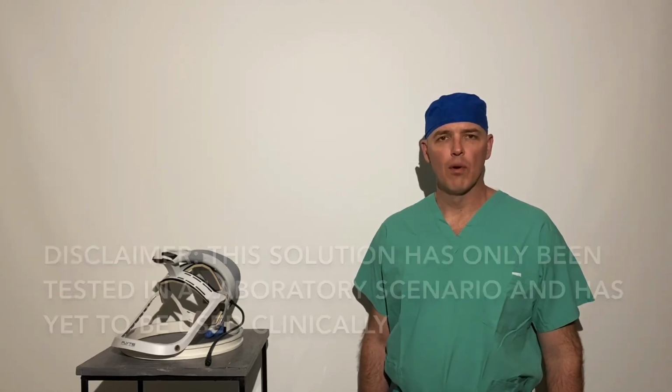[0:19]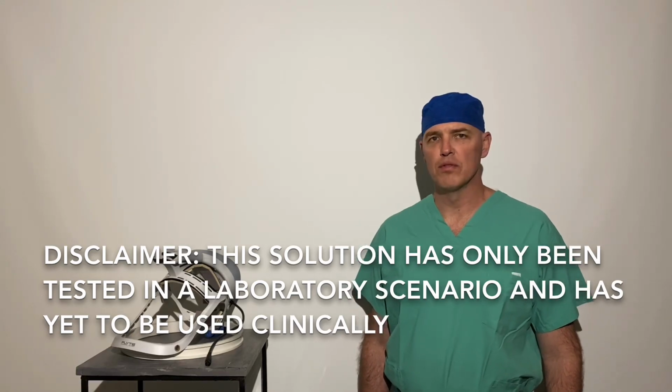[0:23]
When the coronavirus pandemic started, I started thinking, how are we going to be able to protect ourselves against this virus? And as the personal protective equipment necessity has grown more dire, I've been working with Virginia Tech and Stryker to come up with a solution for the Stryker togas that they use in orthopedic surgery. We have taken this concept and tested it with nanoparticles down at Virginia Tech to prove concept, and we can show you how to have an N99 or better PAPR unit that you can use with readily available materials in the hospital and your ortho Stryker helmet.
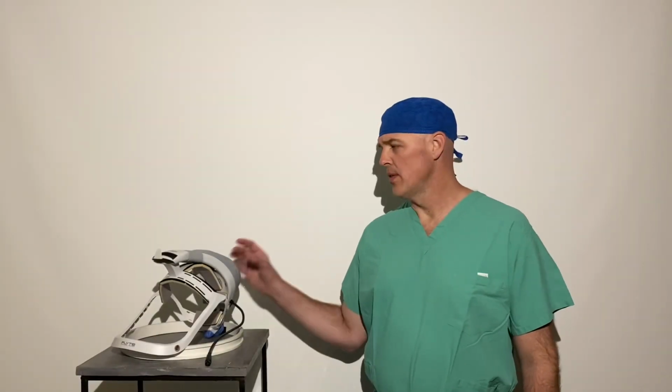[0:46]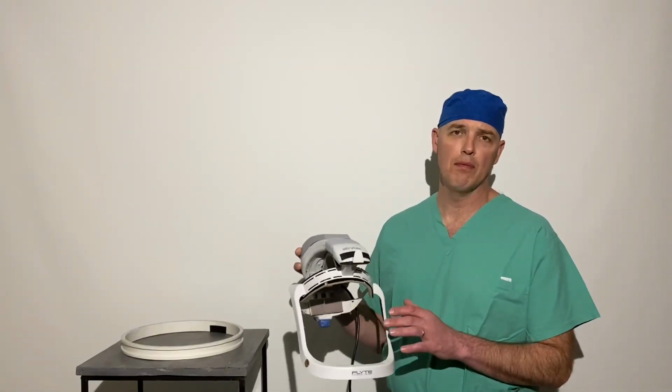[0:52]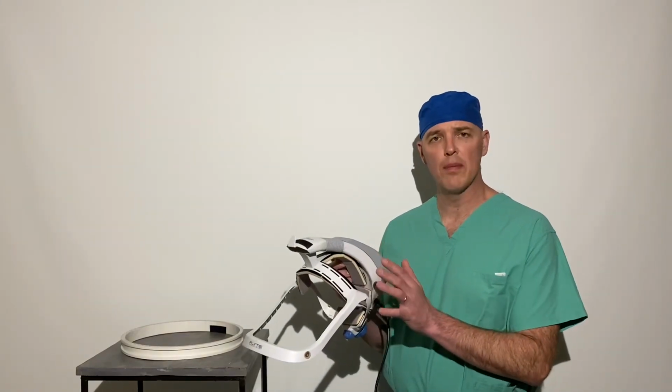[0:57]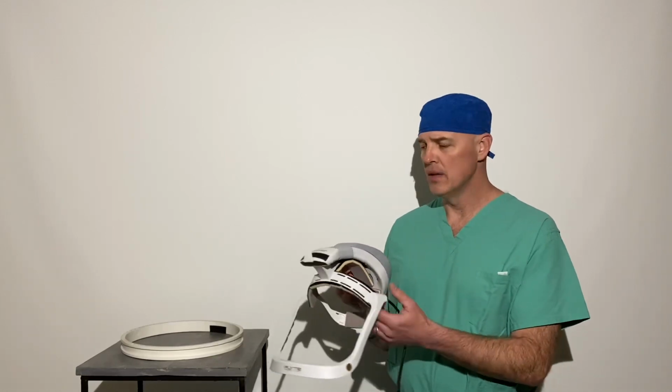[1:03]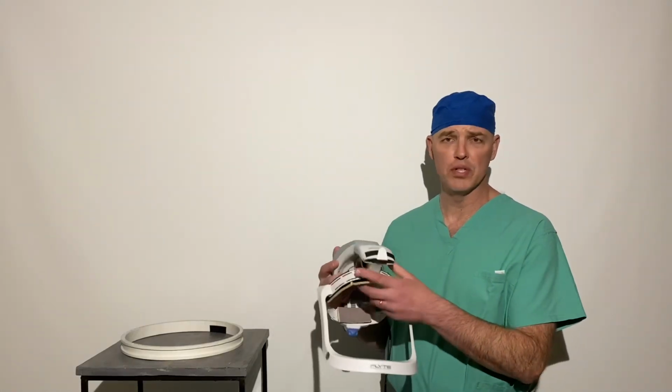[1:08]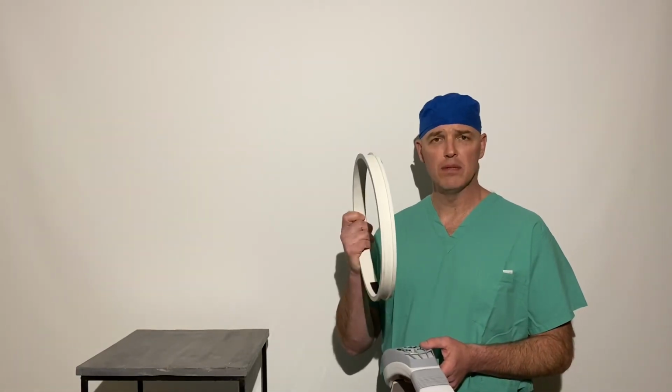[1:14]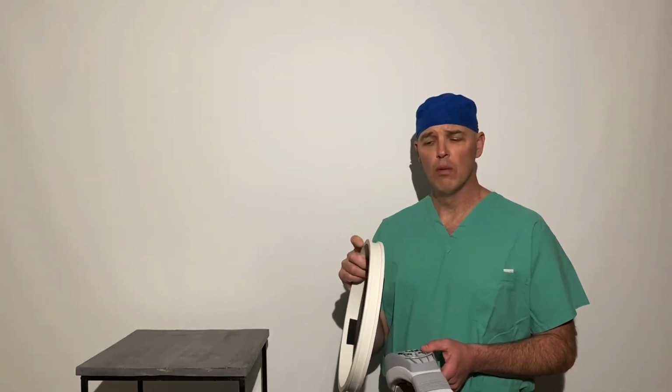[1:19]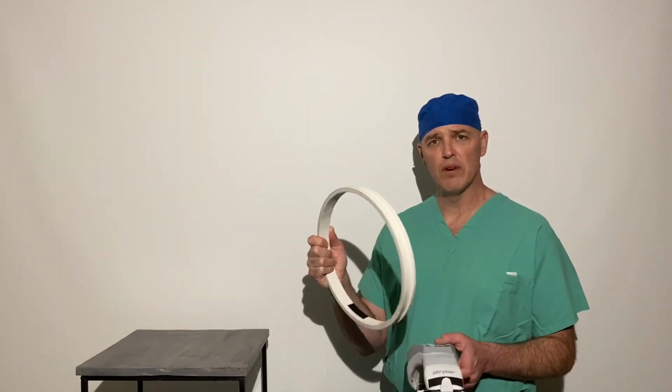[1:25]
So what I started thinking about was how we'd be able to take the Stryker helmet and apply something over top of it to make it protective. And we very quickly figured out that there wasn't enough structure to the top of the helmet to be able to put something over top of it, because it just would collapse on the inside and come off. And so we came up with the idea of putting a ring around the helmet to make it have more purchase area. So essentially we created a ring that is a 12-inch PVC pipe that has been cut to a width of an inch and a quarter, with a 3/4-inch groove cut out of the center of it. This is very rigid and very stable.
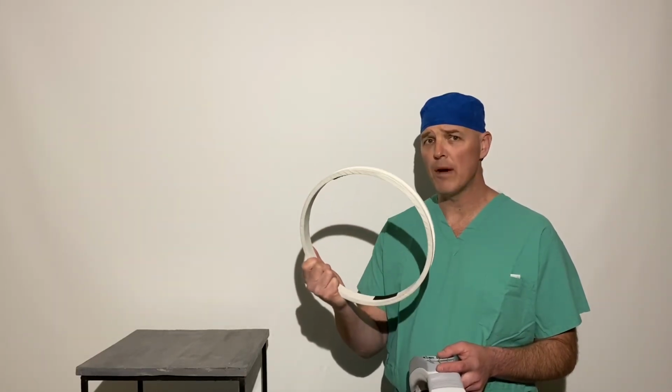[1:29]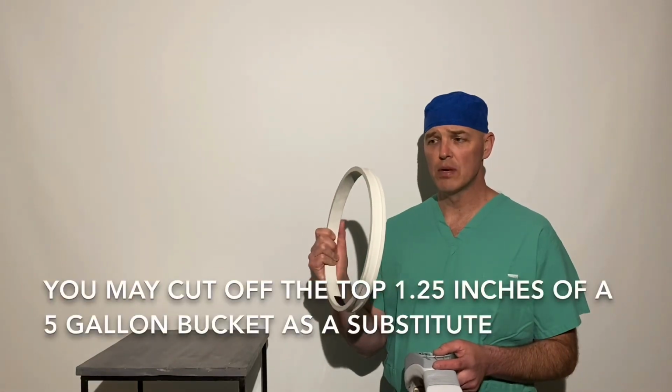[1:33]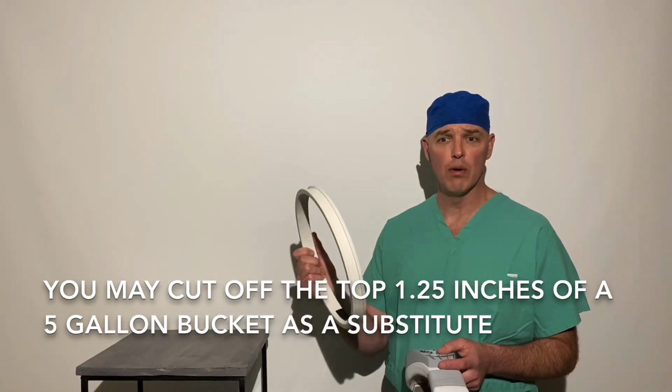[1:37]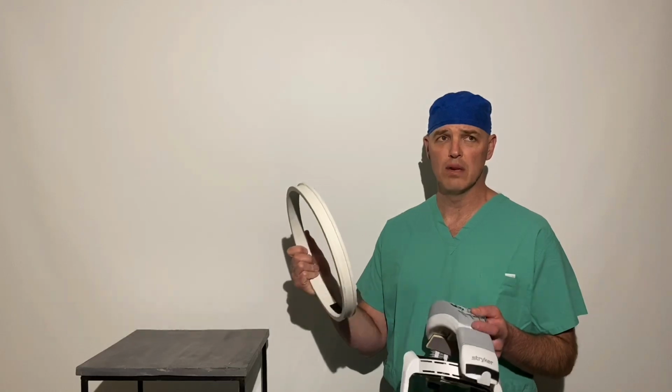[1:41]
The PVC pipe that we found to be the best is the white pipe. I'm not sure about whatever pipes you would have available. This material can be sourced through us here in Roanoke. This is not a money-making thing. This is just a matter of, if you need stuff quickly, we can help make that happen.
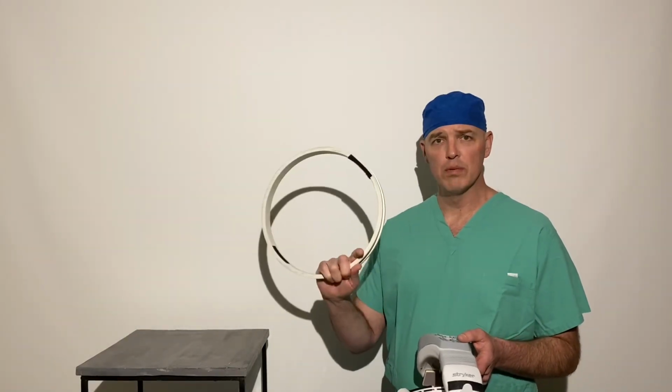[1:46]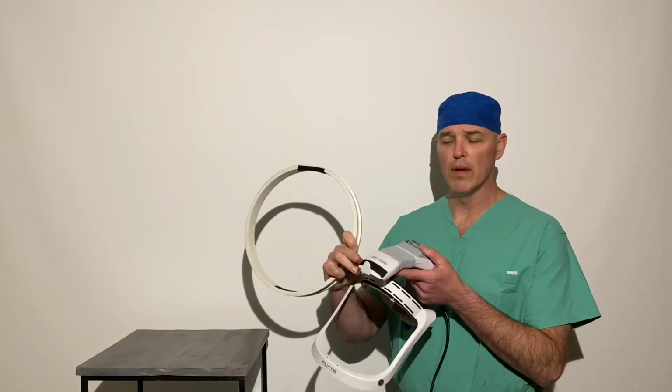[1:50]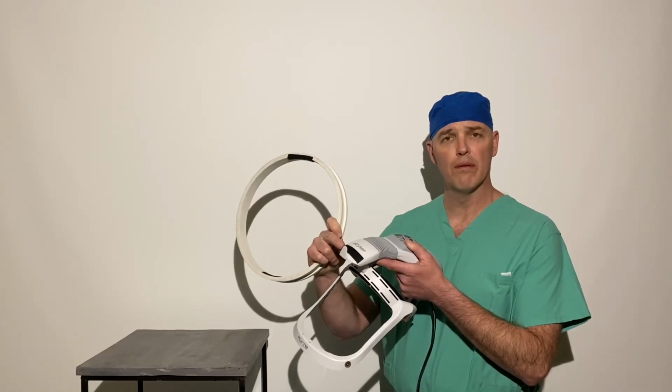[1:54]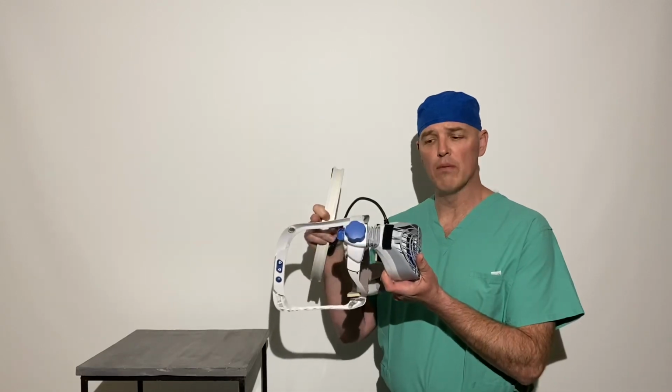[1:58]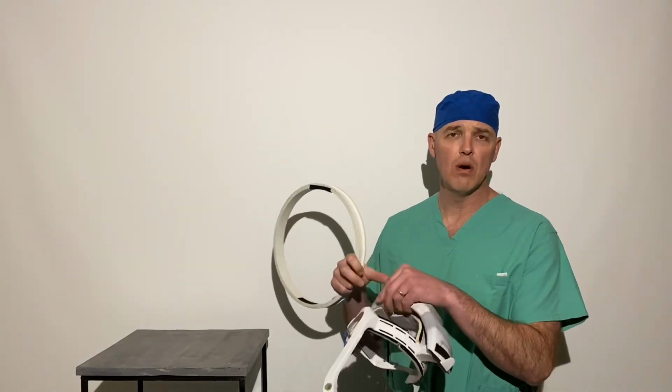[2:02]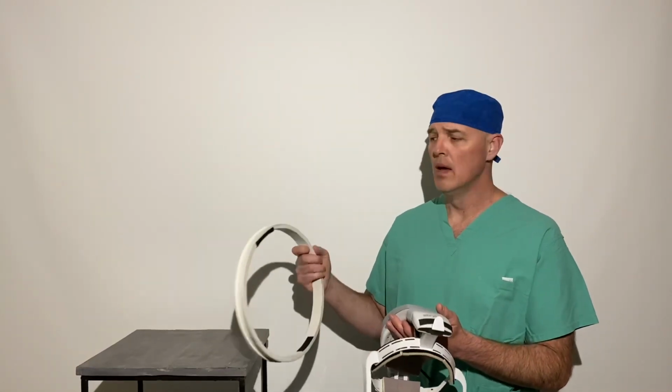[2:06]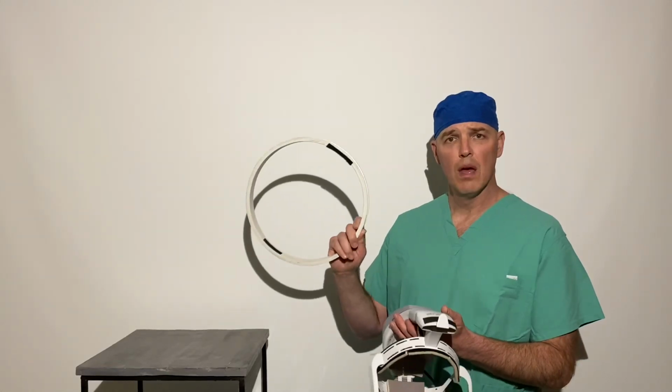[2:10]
We found that Velcro was the best way to attach it to the helmet. There's a piece of Velcro on the top of the Stryker helmet here, right below the hook for the face shield, and there's a piece of Velcro on the back of the helmet, right below the fan area there. Those come off very easily. They won't damage the helmet, and your orthopedic surgeons won't be upset when this is all said and done. Then you have matching Velcro on the ring to help hold it onto the helmet.
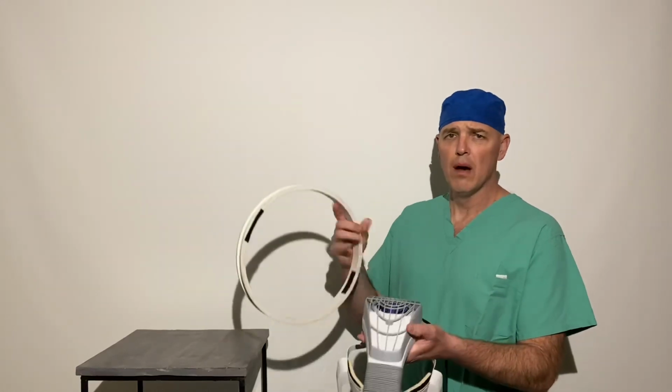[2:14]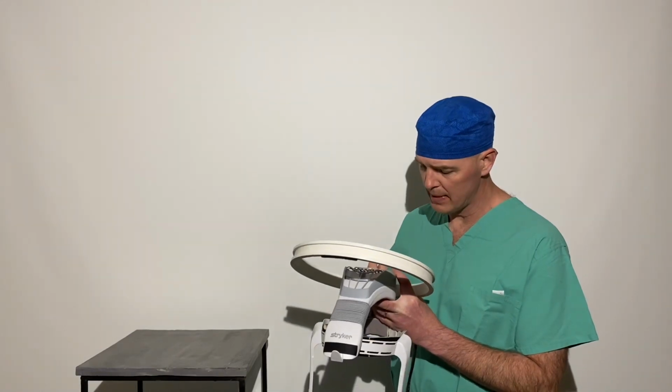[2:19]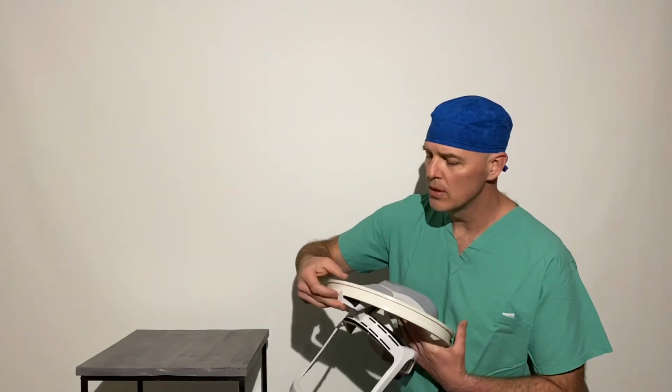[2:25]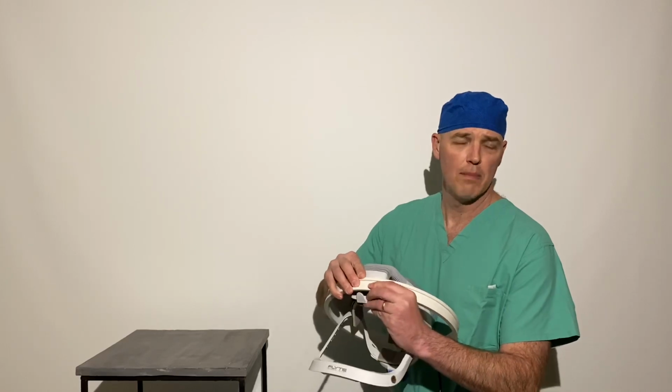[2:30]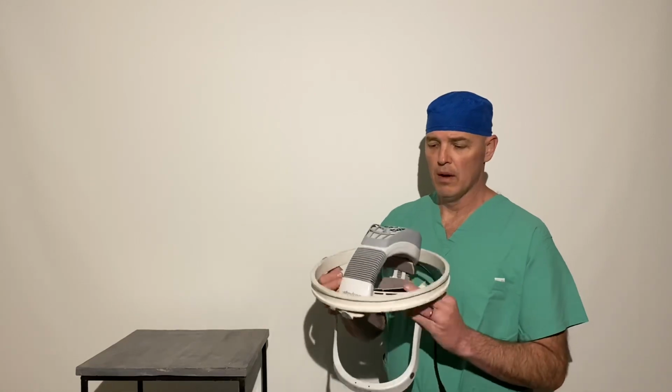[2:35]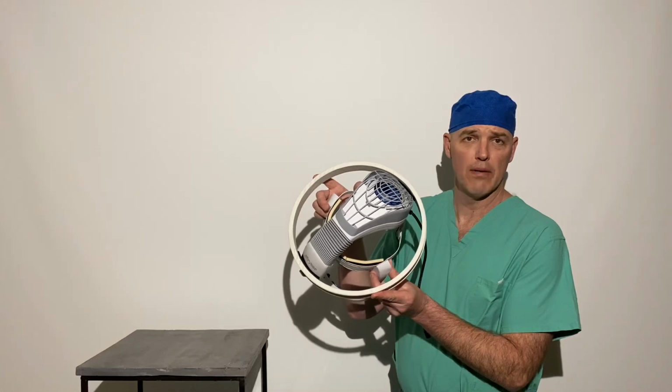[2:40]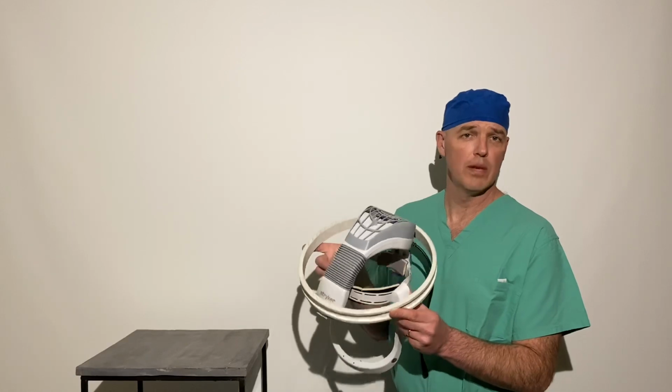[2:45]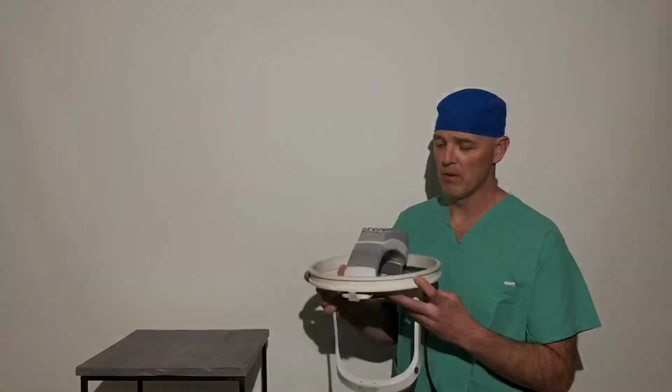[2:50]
What we found was that it's easiest to put this on the back of the helmet and work it up to the top of the Velcro as best as possible. And then as you put this other section down, work it down as close to the hook on the front as possible. You still need to have a little bit of room to hook your face shield in on top of the helmet there. And so once that's in place, you actually have this kind of crown-looking appearance on top of the helmet that gives it a lot of extra structure to attach pieces to. Kind of jokingly, with the coronavirus, we named this the Stryker crown because it looks like a crown when you're wearing it, and because of the coronavirus.
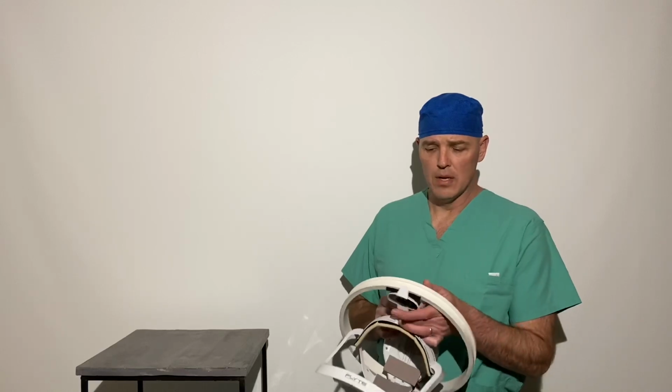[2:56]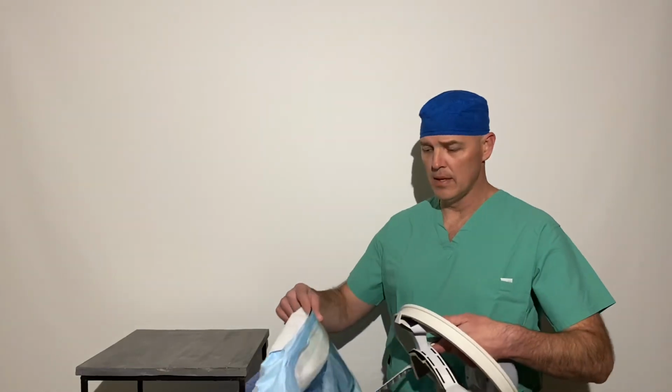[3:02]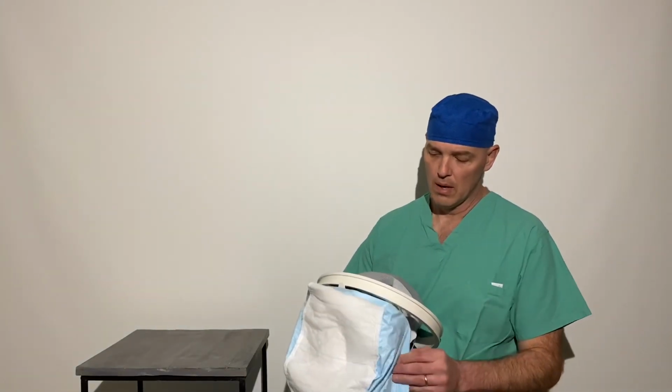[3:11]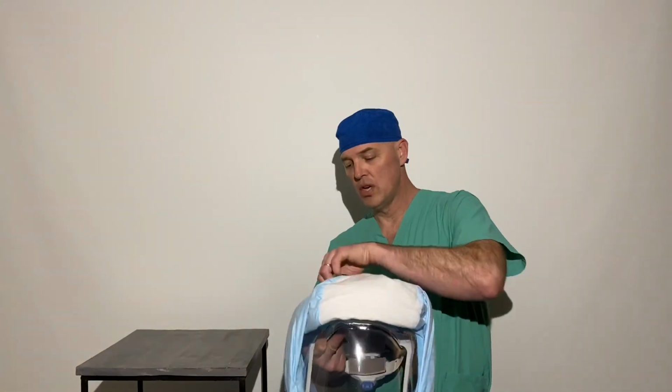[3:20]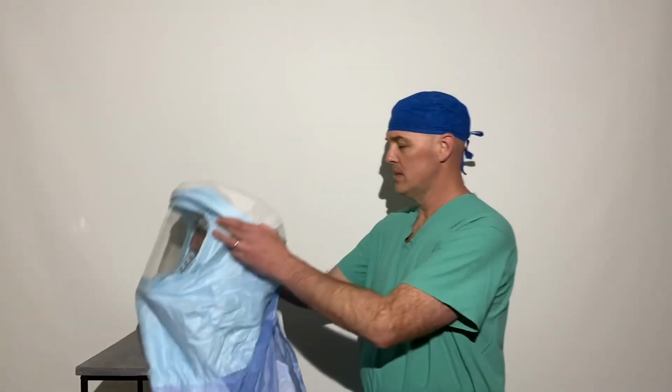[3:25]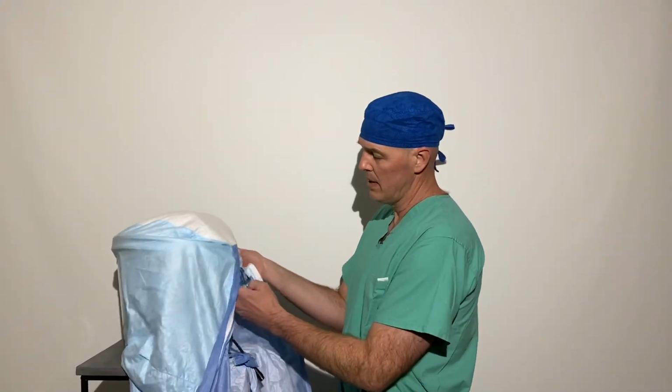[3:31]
Once you have the ring in place, it's very easy to then attach the regular Stryker toga on top of it. They come inside out, and so it's pretty easy to take and put your hook for the face shield on top of the hook right there, and then you attach the magnets to the face shield here. And then once it's in place on the actual helmet, you just drape the gown up and over and gently work it back so you don't end up tearing anything. They're pretty resilient. Once you get it in place there, you need to start the zipper down the back a little bit to help hold it in place and make it easier to get the other material on.
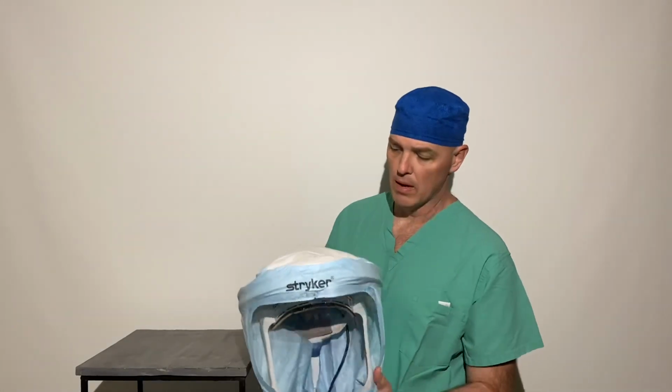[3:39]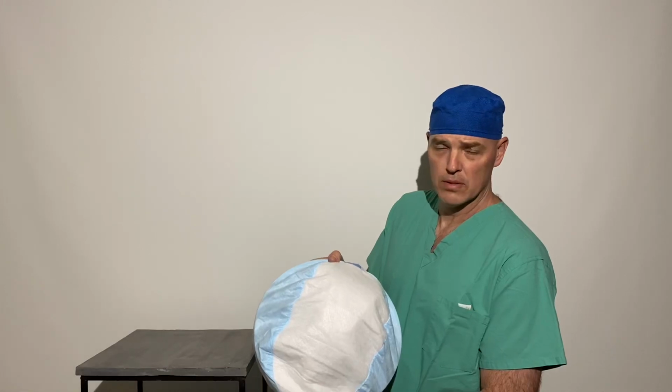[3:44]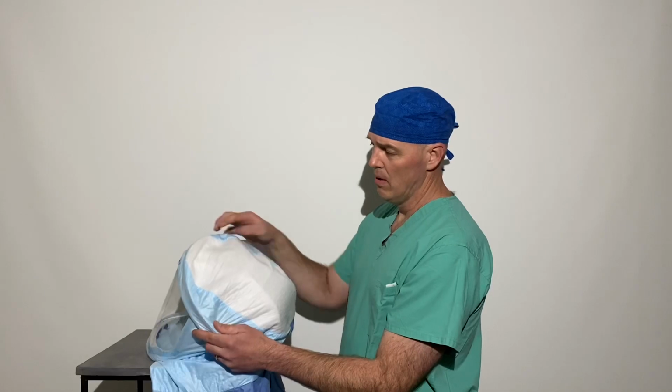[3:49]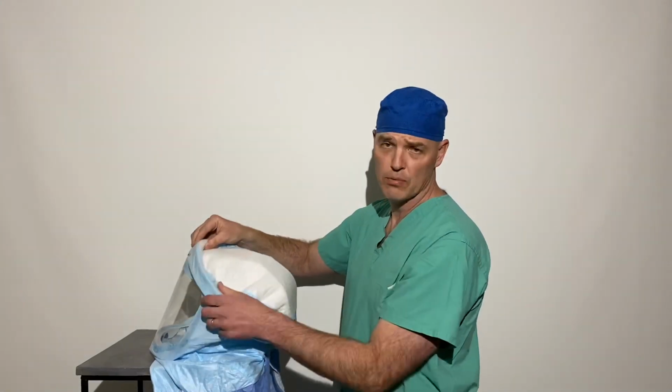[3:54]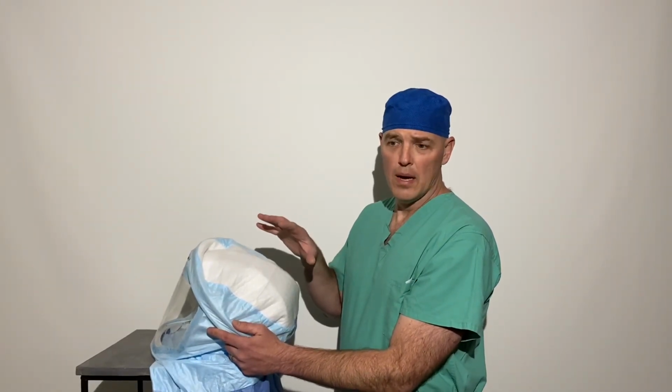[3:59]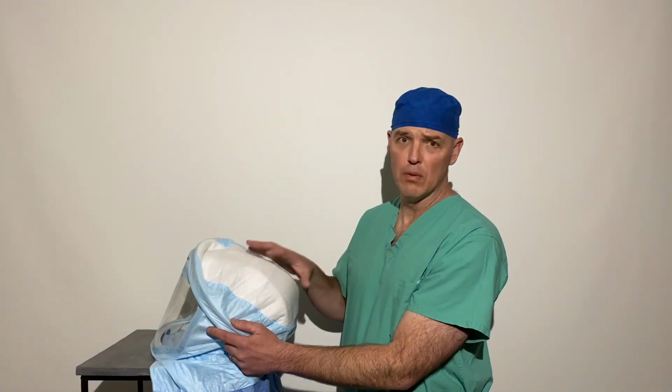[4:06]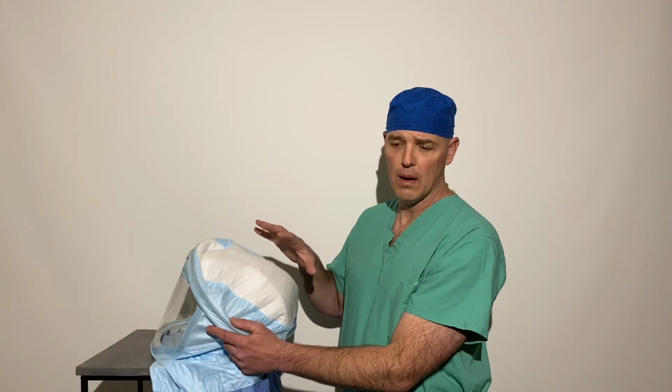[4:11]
And so now you have essentially the toga with the crown on top of it, and you can see how it gives you the structure here. The key to this is getting all of the white material inside of the ring to make sure that you are protected, because that is where the air comes through from the fan. This material is 0.185 micron, and so it's not protective against the virus. The suit by itself actually passes a Bitrex test without anything added to it, but the company was not comfortable promoting this as being viral protective.
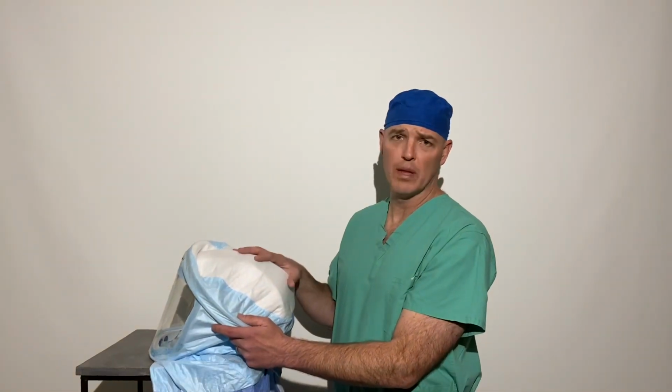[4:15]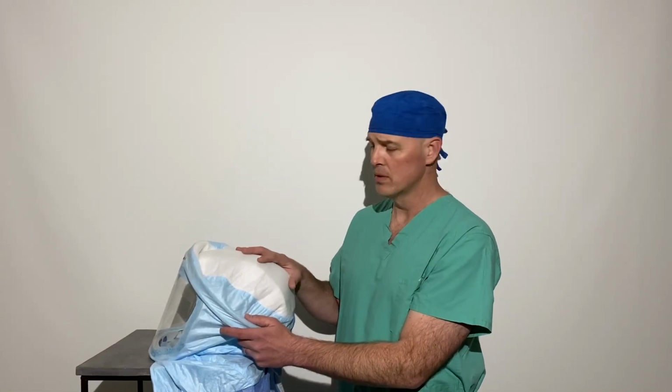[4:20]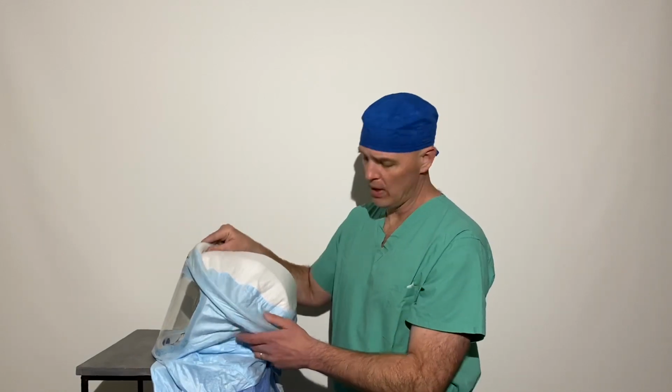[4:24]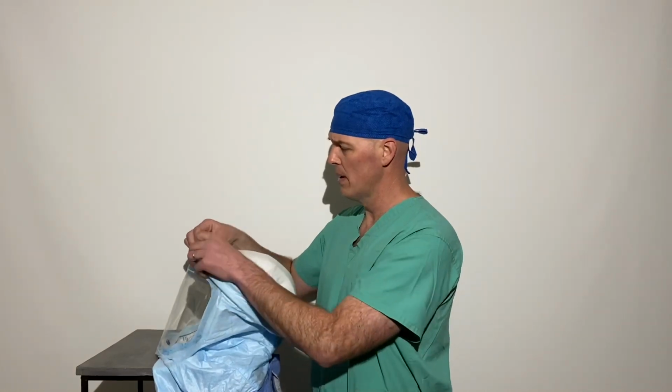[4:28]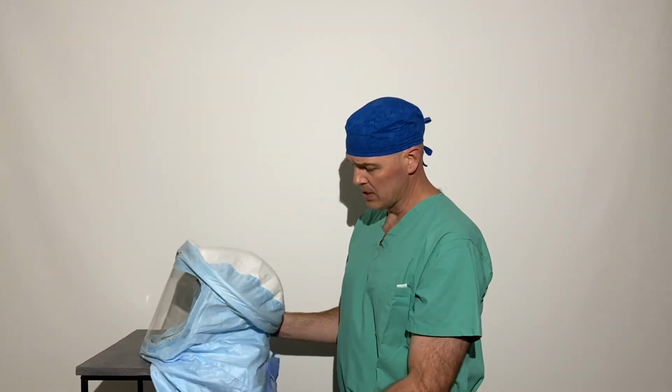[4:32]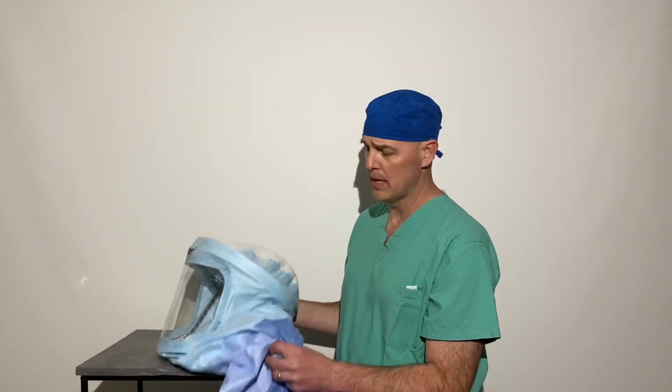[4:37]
When we tested it, we actually found that its fit test was only like a 3 or a 4, that it actually let in lots of outside particles. So the key is to make sure that the white section is inside of your ring right here. And it's pretty easy to work this material around and pull it up so that it actually fits inside. Once you have that on there, then we are going to add some extra material to the top of it to make it so that it is protective.
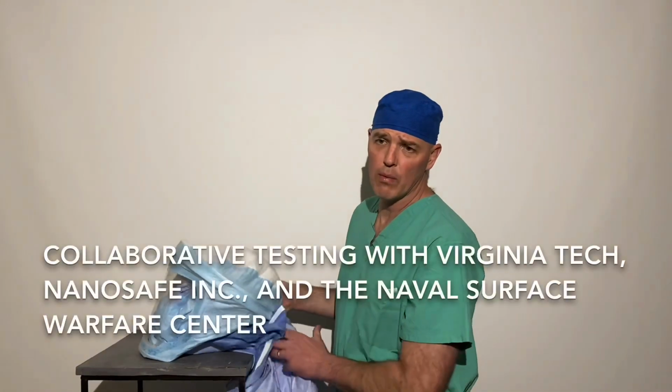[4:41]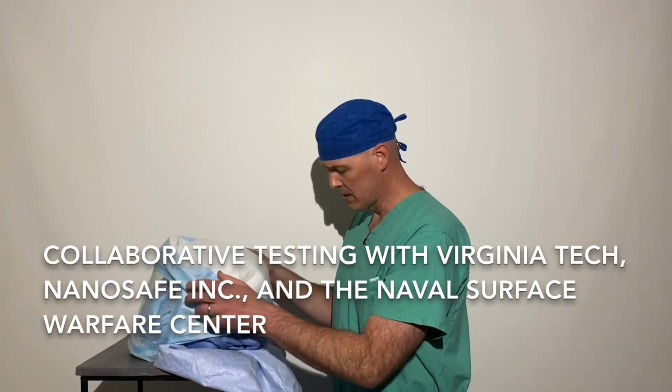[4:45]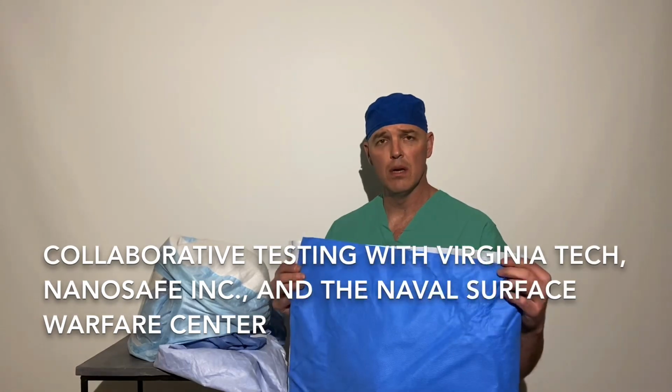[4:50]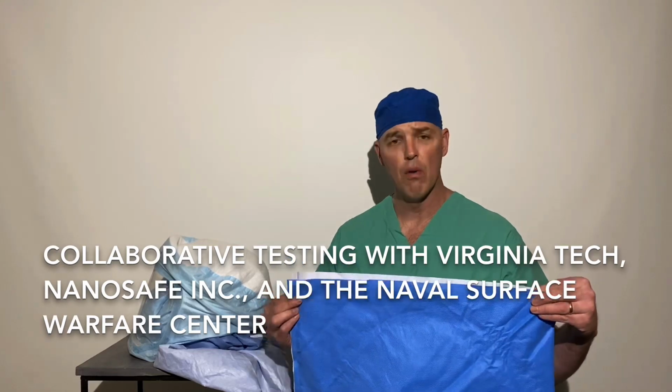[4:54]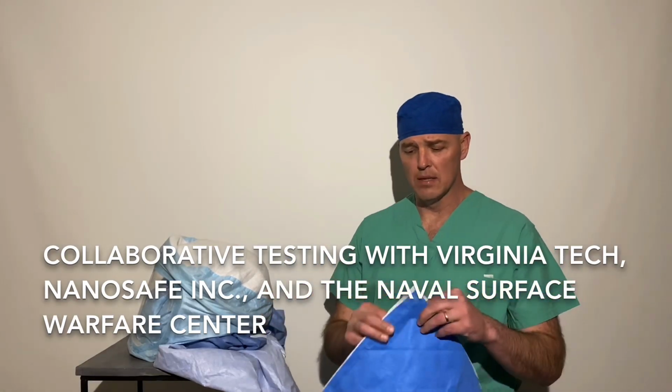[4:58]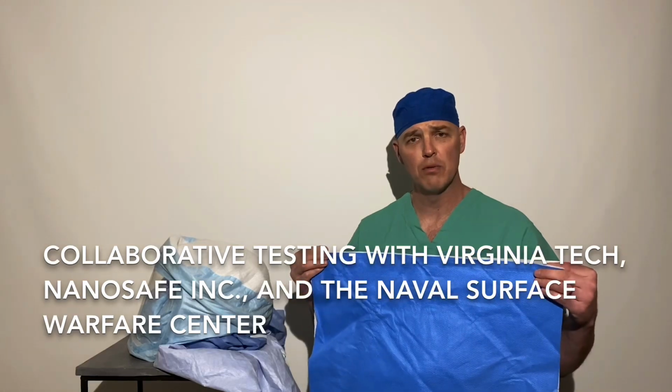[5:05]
Going through a number of iterations, working with Stryker and the Virginia Tech nanoparticle engineering department, we found that the Halyard material, which is the standard case wrap material you would normally have for your ORs, is the most protective. It ends up being a 44 by 22 rectangle that's folded in half, so you end up with a 22 by 22 inch square. That ends up being the easiest to get on and off the helmet.
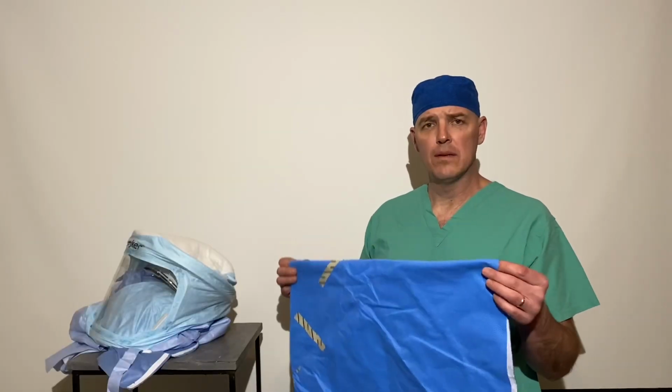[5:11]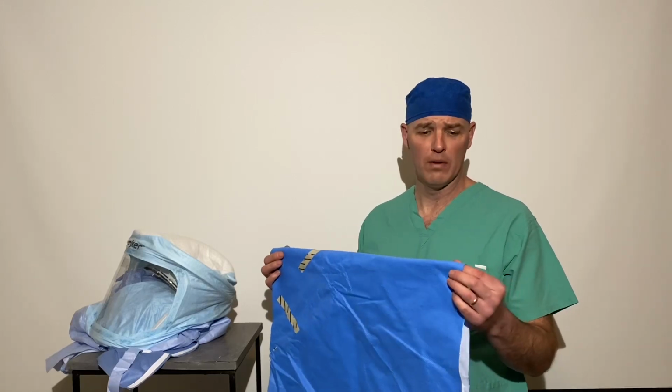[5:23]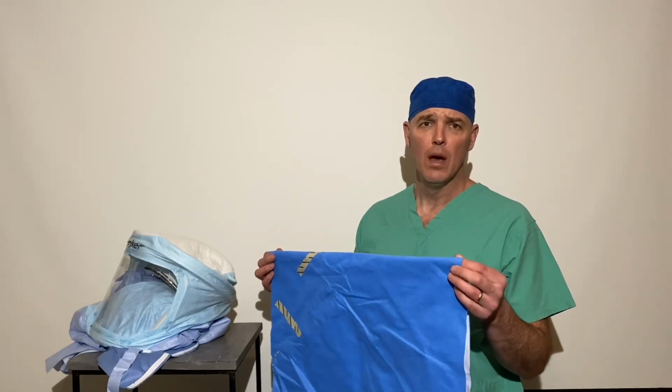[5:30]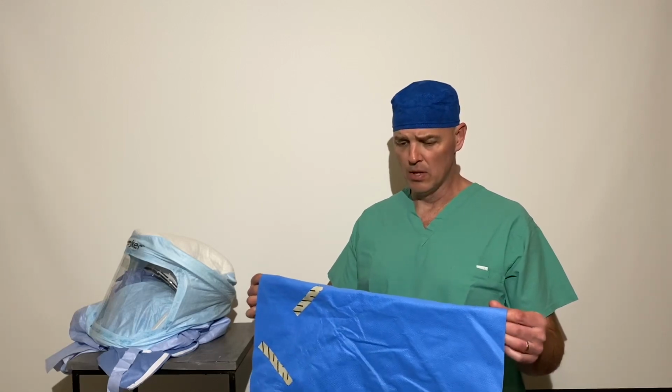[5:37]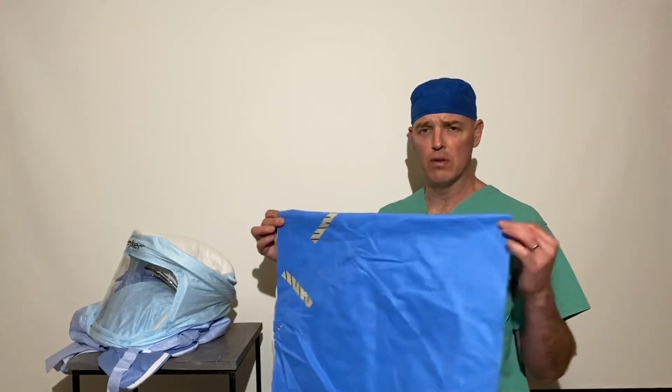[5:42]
It's critical that when you use the Halyard material, you fold it over and create four layers for it to be protective. A single layer by itself was not protective, but the four layers together were. We found that folding it over and keeping it as one piece was the easiest way to attach it to the helmet. Having two separate squares made them want to slide over top of each other and were much more difficult to put on. So really this seems to be the best way to do it. Have a rectangle that you fold in half so that you truly have two squares, and then you can put them on top of the helmet.
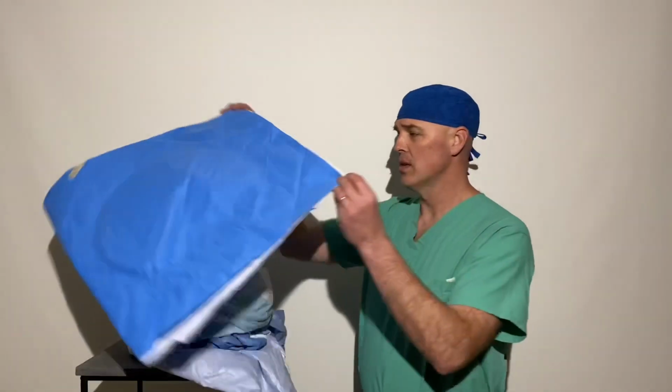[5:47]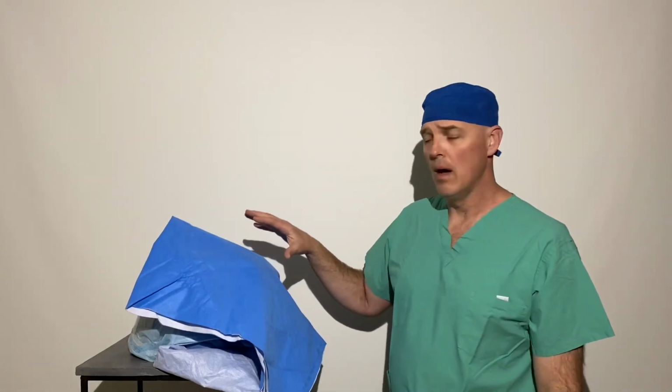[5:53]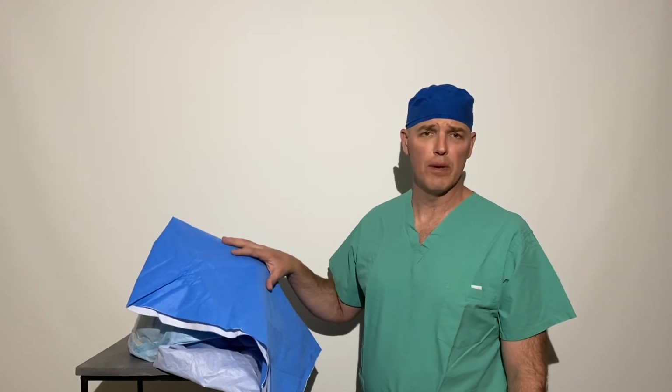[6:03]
Once you lay this on top of the helmet, this becomes an N99 or better PAPR unit with the fan on. We had the fan on high. We tested it in their nanoparticle generator area with particle penetration. We used silicon dioxide at a range of 100 to 300 nanometers, blowing out at 500,000 to 600,000 particles per cubic centimeter, which is essentially blowing a fire hydrant at the top of the gown. And we were able to show N99 or better protection with a fit test of 300 or better, which is excellent protection once this is in place.
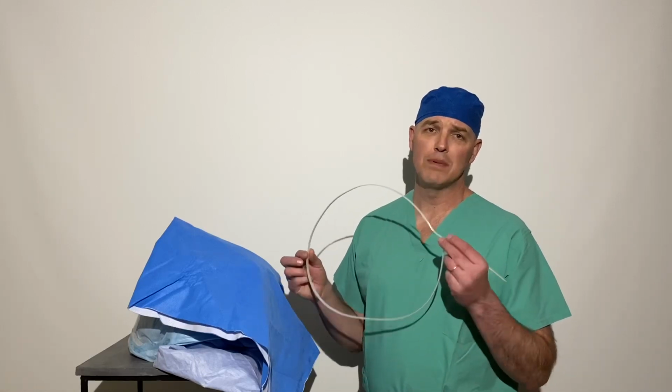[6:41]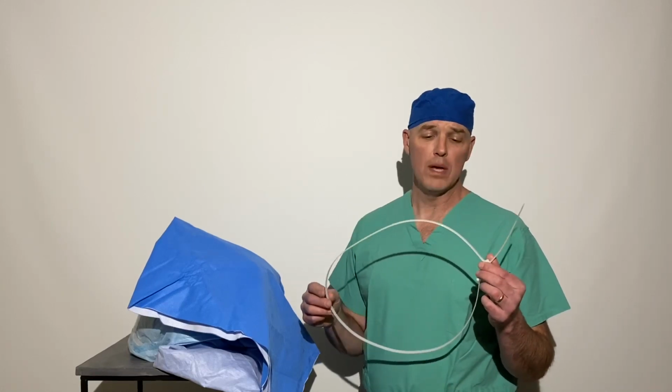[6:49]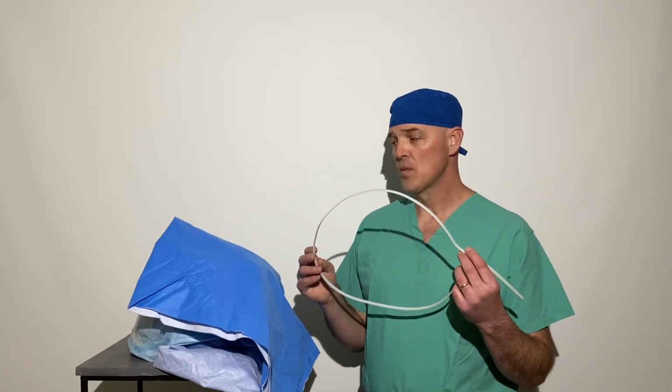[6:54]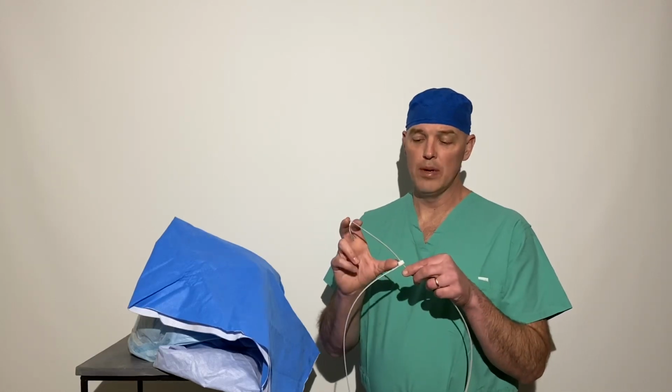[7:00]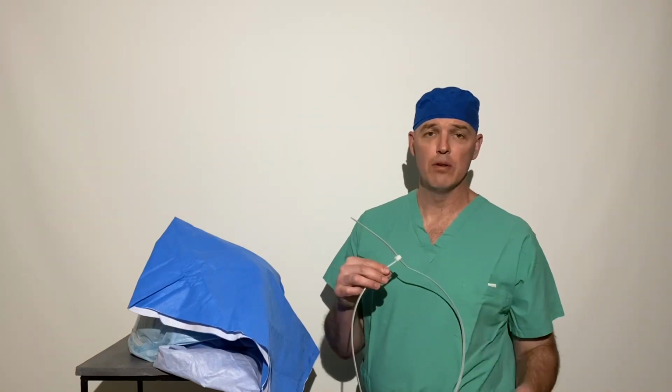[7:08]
We also figured out how to get this on. We used a number of different O-rings and rubber bands, and none of those worked very well, but the good old zip tie seemed to be the best way to put this on. This is a 48 inch zip tie that you can get in boxes at Home Depot. We found that this was the best way to attach the material to the top of the crown. You need to start it with about 5.5 to 5.75 inches of a tail to make it easiest to put on with one person. If you're doing it with two people, it's relatively easy, but if you're doing it yourself, it works best if it's fairly tight when you put it on.
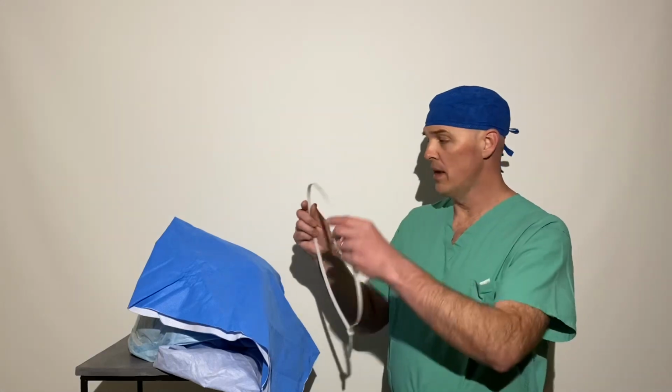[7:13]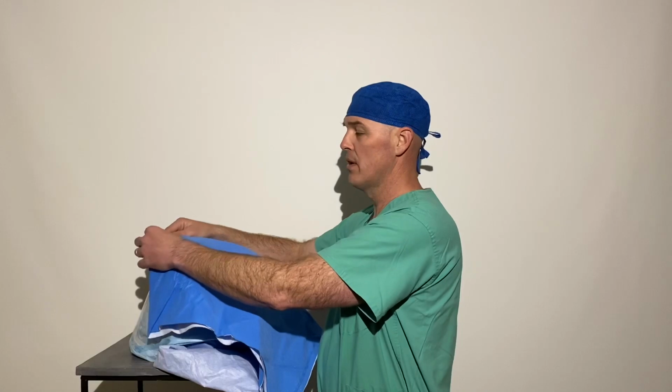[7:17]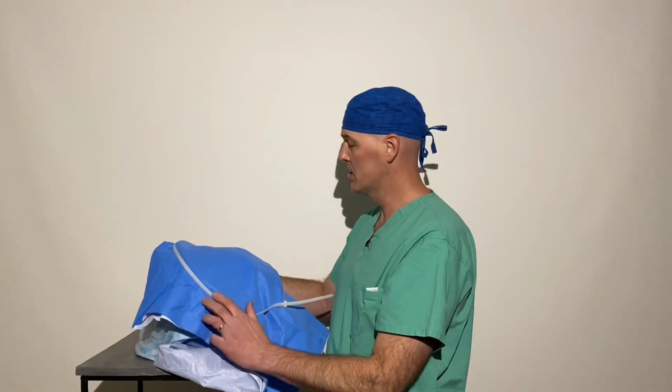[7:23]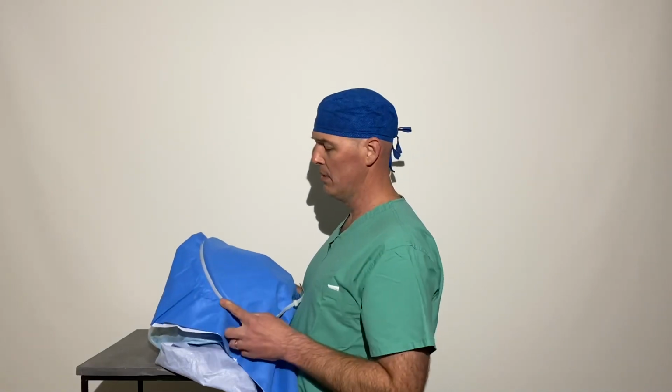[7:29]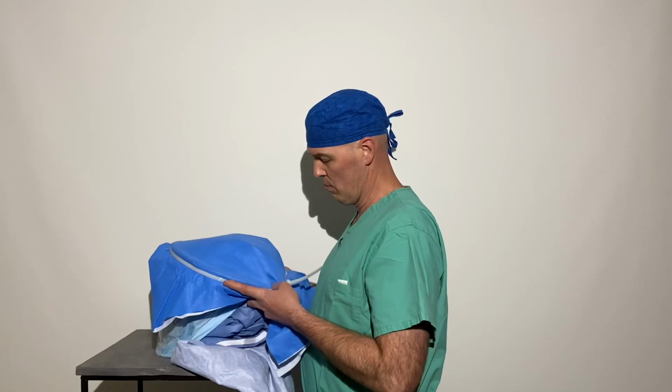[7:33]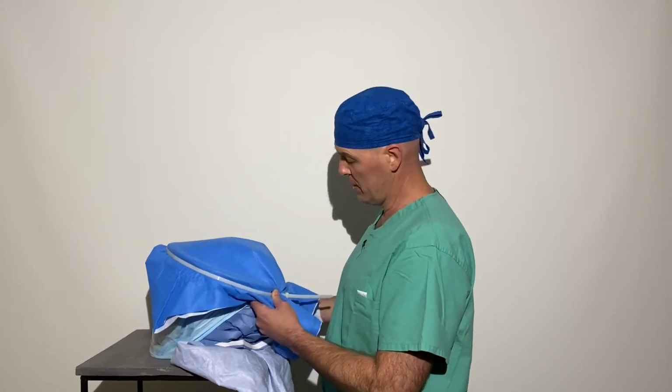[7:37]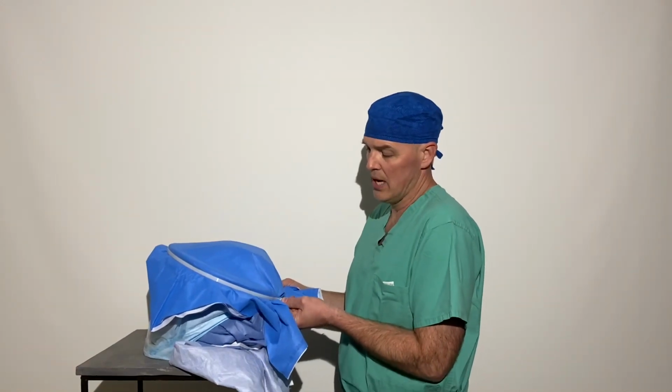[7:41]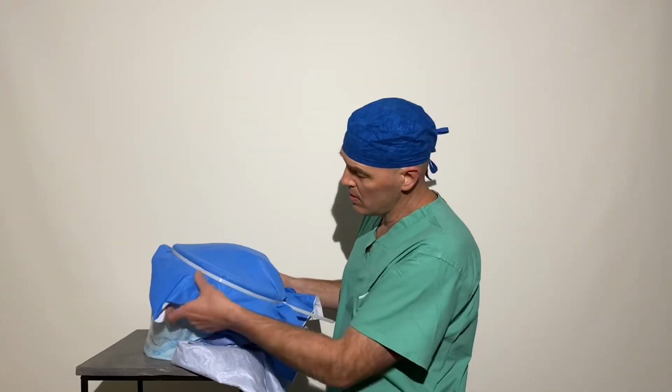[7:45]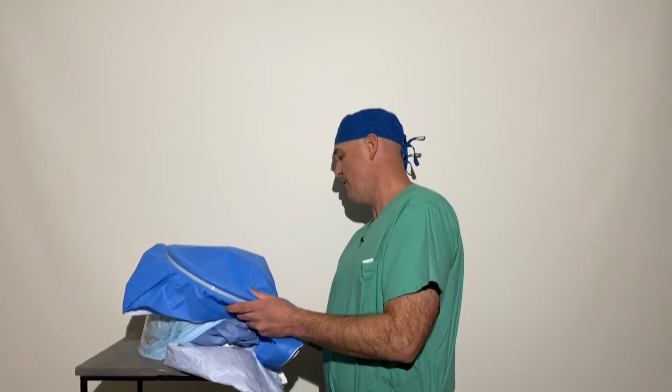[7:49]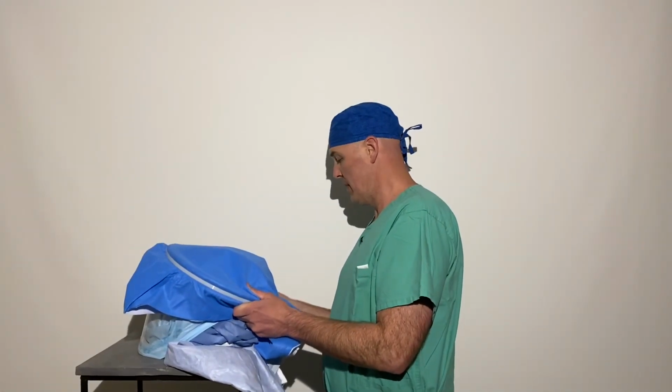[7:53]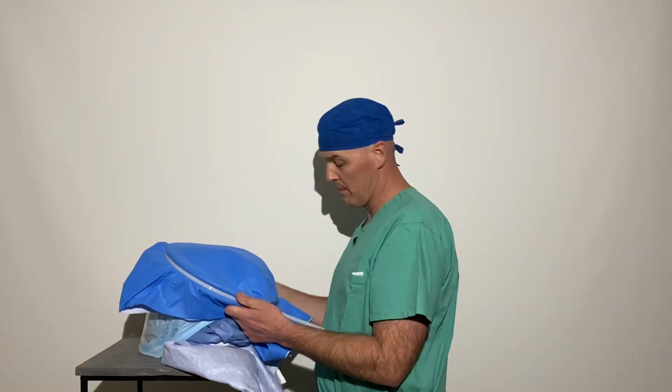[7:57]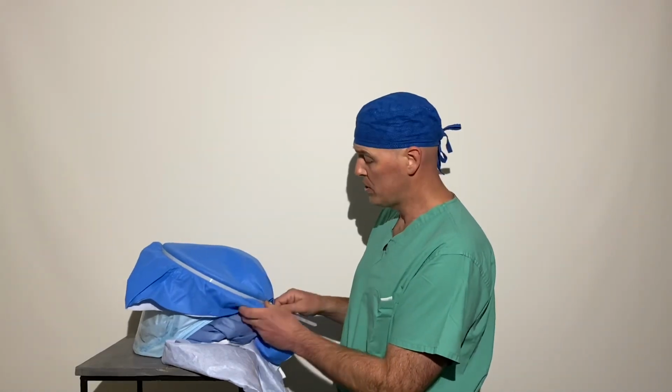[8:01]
Make sure your material is in front of your ring so you don't have any gaps. Start the zip tie at the front, seat it inside of the ring, and work your hands back. You have to put a little bit of pressure down on it to get it to squeeze into that little ring we have there. Once you get it down flush, it's best to give it a little extra tug so that it hugs into that groove. Then work around to make sure it's fairly flat on top and you don't have a lot of really big grooves. A lot of little micro grooves are okay, but with a big groove, you have the potential for air penetration into the helmet. Although once you get this tightened down, you can pull this pretty tight.
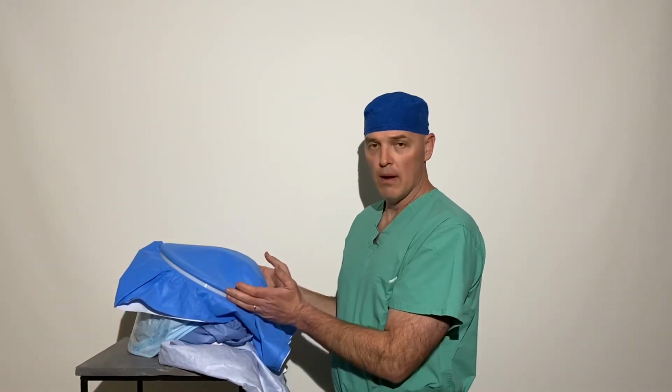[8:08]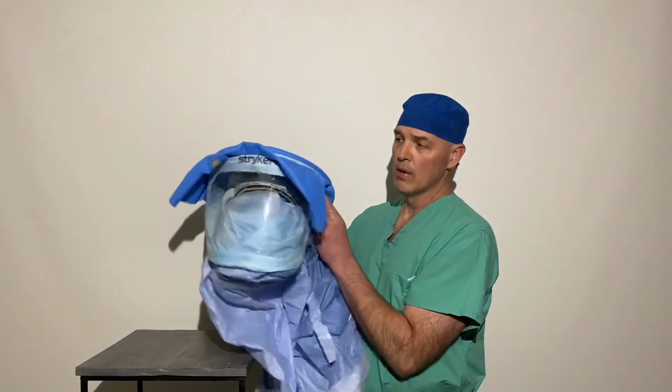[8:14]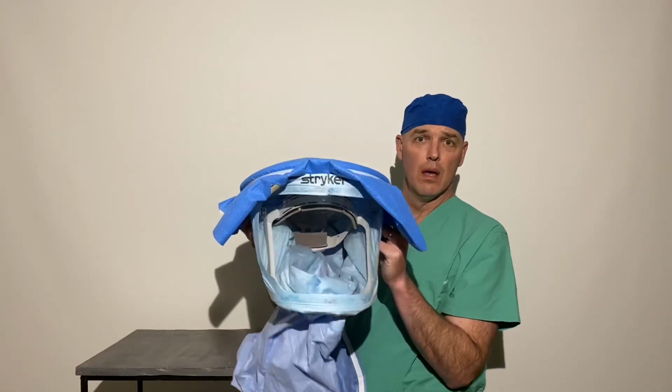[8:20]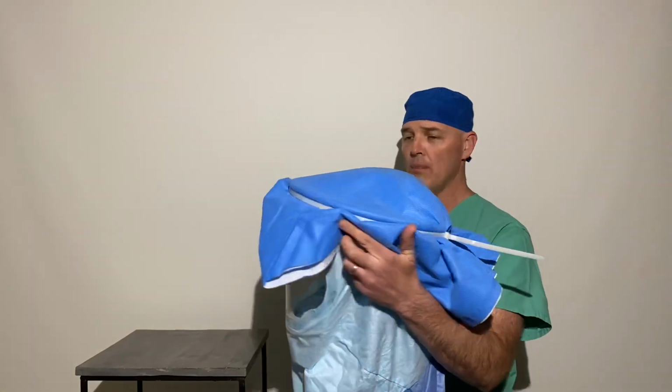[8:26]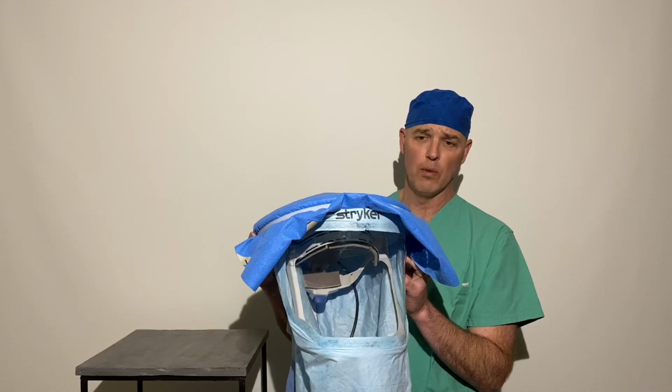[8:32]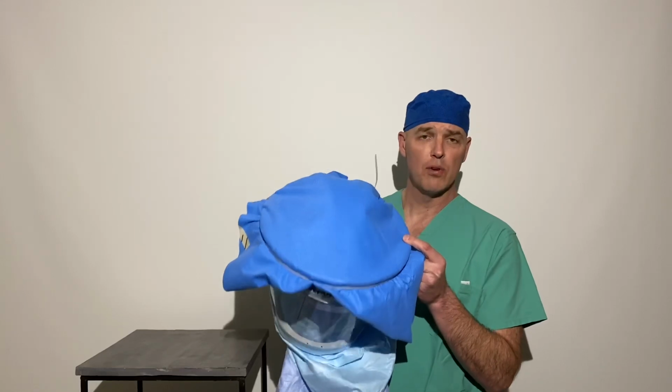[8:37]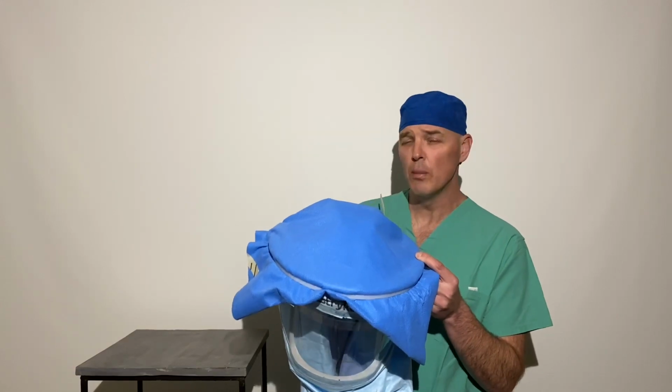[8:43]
Once that is seated, you now have complete containment of the top of the hood. If you look at it here, you can see how it goes all the way around, and at the front, you can see how the entire helmet is now enclosed inside the material, and the zip tie just sticks out the back. Yes, it's got some funny wings on the front, but those actually make it a lot easier to take off once you're done using it. So that right there is N99 or better protection. You can turn the fan on, and it has good ventilation. You don't get terribly overheated. It's a little bit warm, but not bad, and you have pretty good airflow.
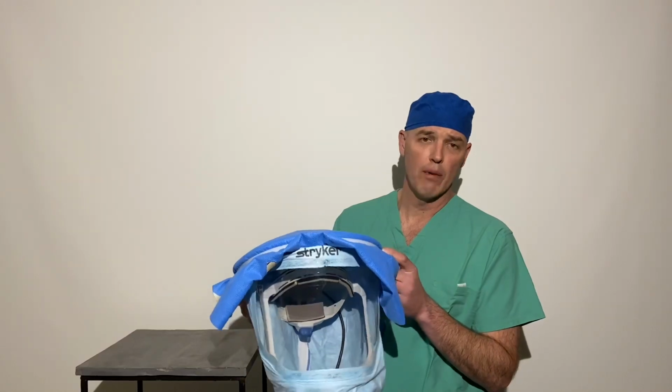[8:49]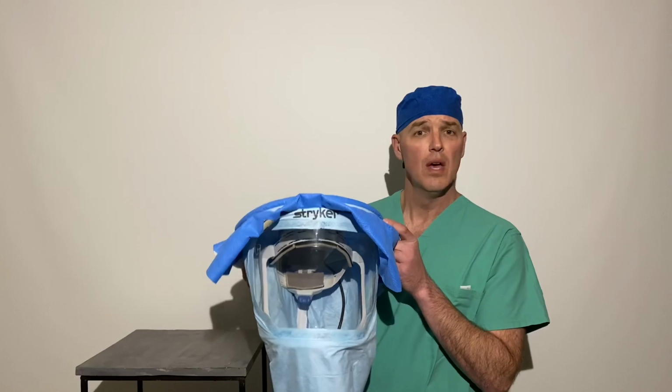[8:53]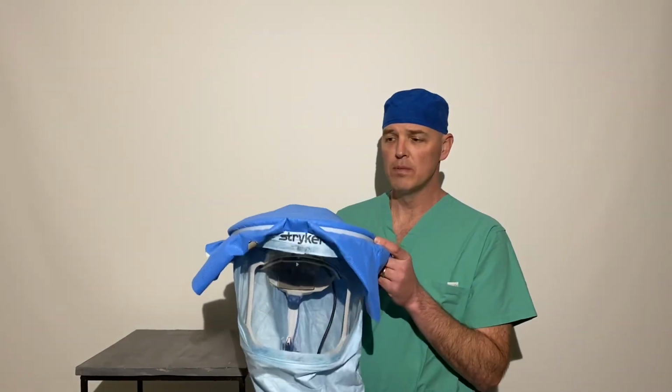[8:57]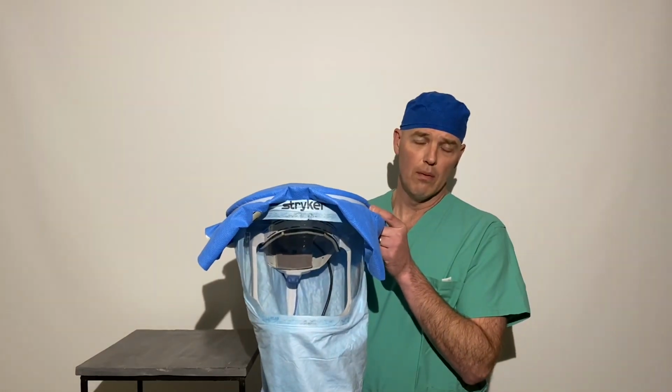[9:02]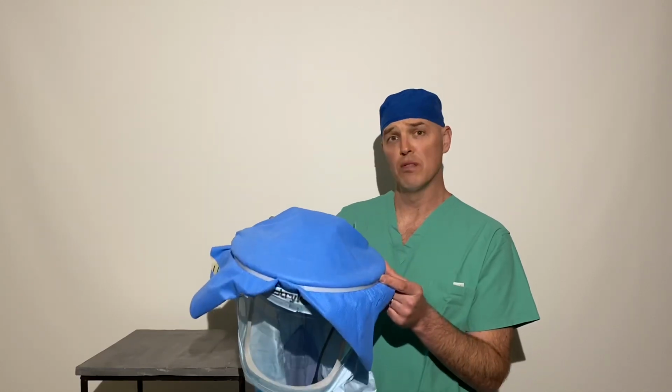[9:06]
Because most of us are wearing regular surgical masks, I would encourage you to wear a regular surgical mask underneath this, especially for the doffing procedure, to make sure there's no contamination. But in terms of this protecting you, I would feel very safe given the strenuousness of the testing we did with the nanoparticles, which showed that there's nothing getting through this except pure clean air.
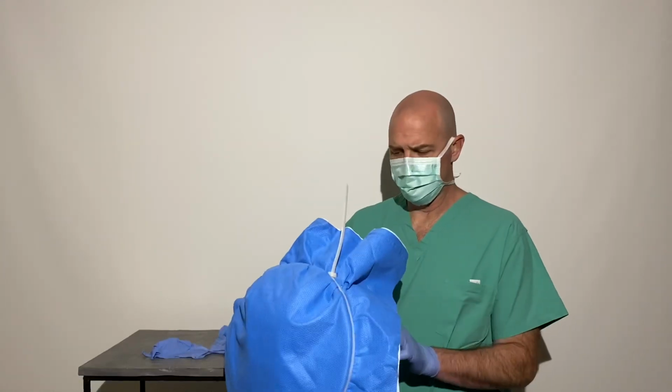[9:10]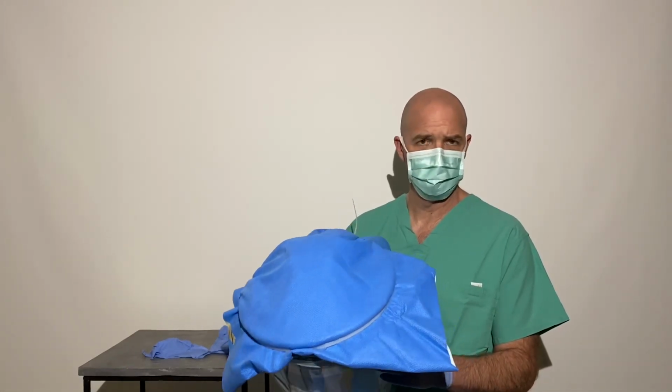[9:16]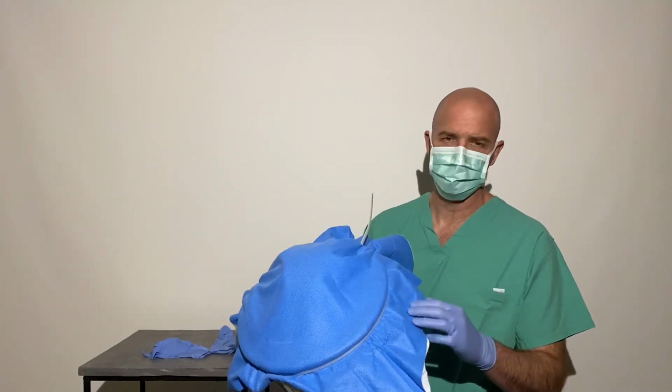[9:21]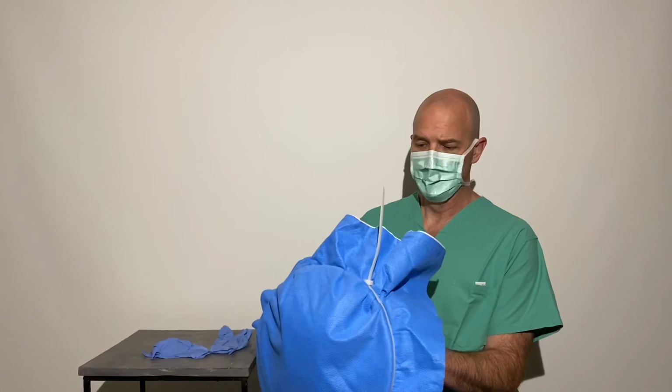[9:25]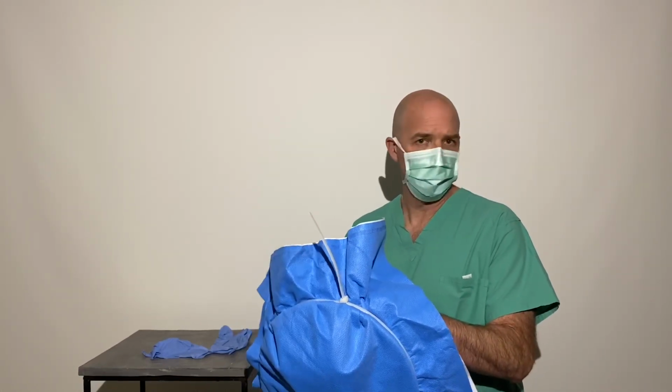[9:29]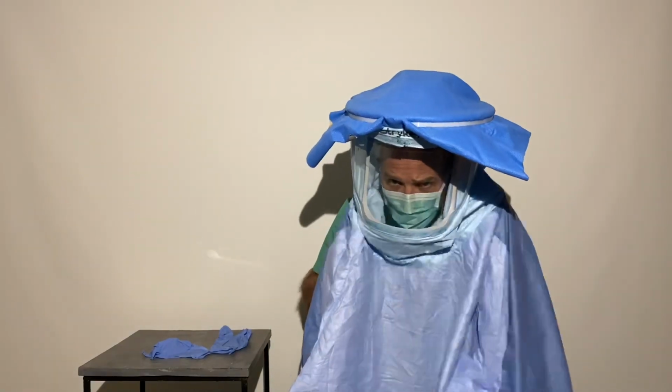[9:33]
All right, so if you were doing this by yourself, it's actually pretty easy to have the hood ready to go. Just be careful about grabbing a hold of the crown. You can pop the stuff off and then you'd have to restart again. It's actually easiest to hold by the helmet, on the inside of the helmet. If you grab a hold of the helmet itself, it's just like a bike helmet or whatever. It's easy to slide on and set up over top of your head.
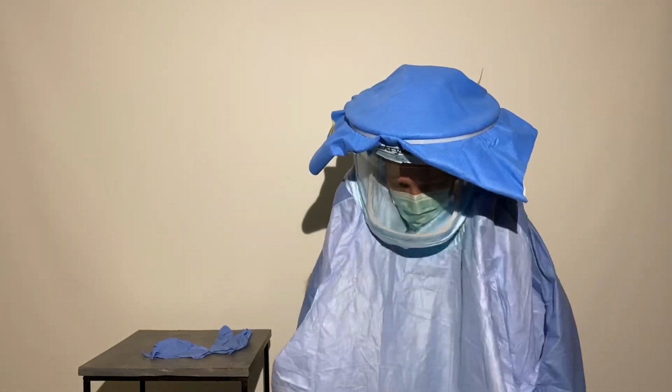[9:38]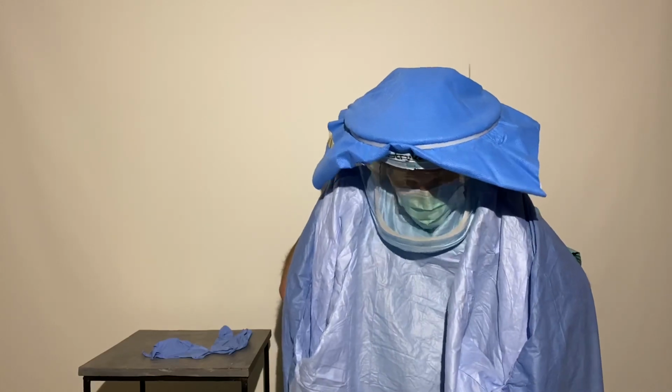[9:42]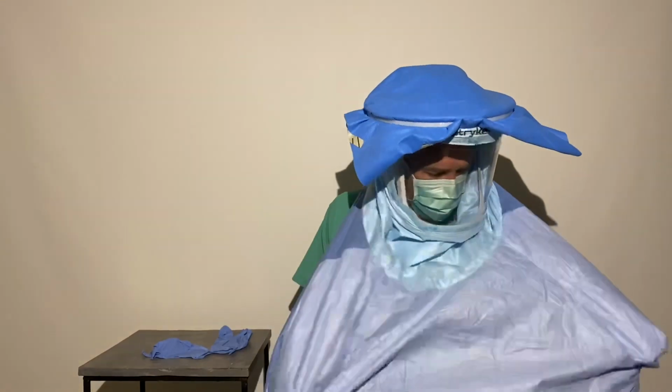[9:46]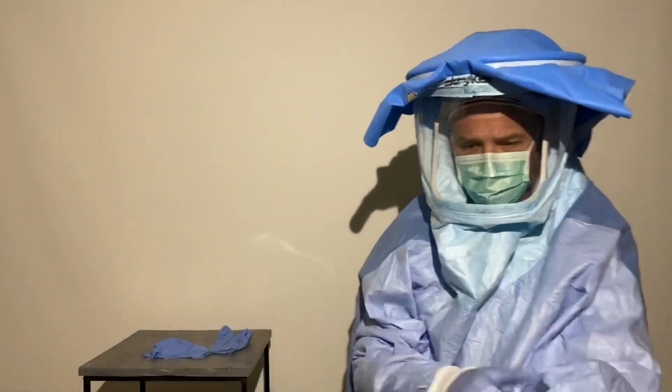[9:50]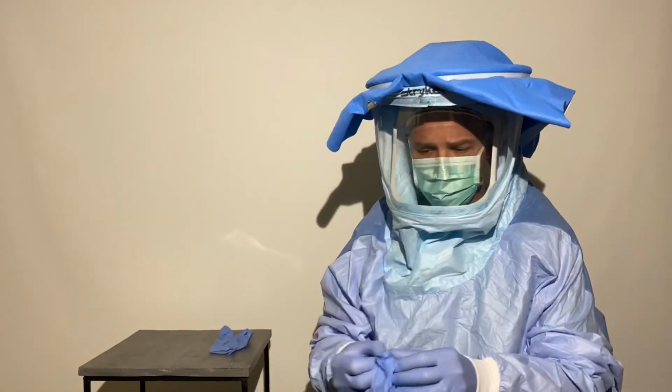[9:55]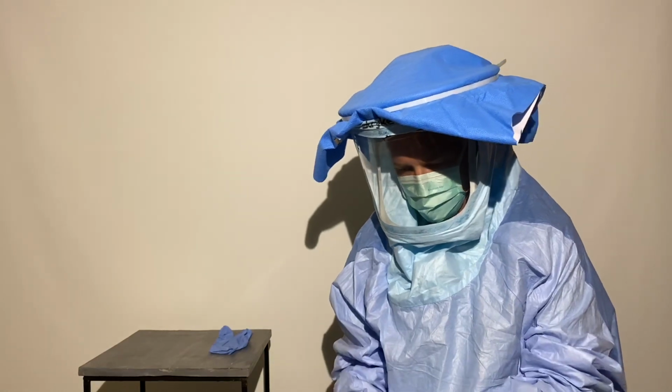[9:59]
And once you actually get it on, there's a little adjustment knob in the back that helps make it tight, and just get that down over your head. So once you get it on, you can put your arms in all the way, and you can see that now I'm fully covered and protected from all the evil coronavirus that I might come in contact with. And so we're gonna double glove here for safety purposes.
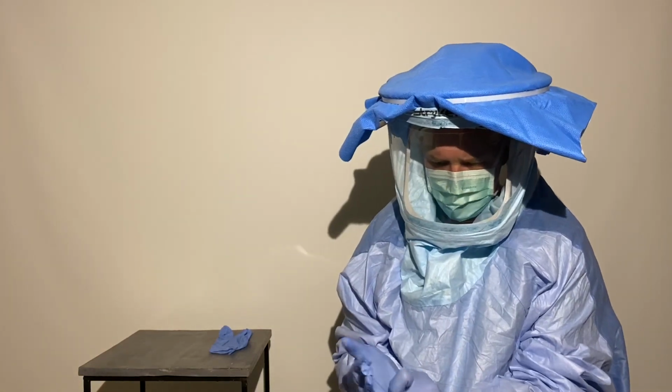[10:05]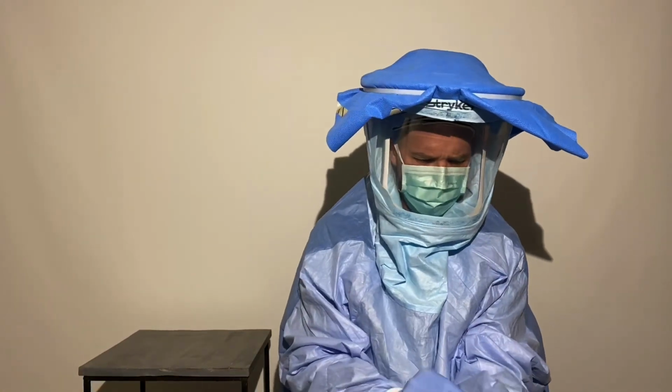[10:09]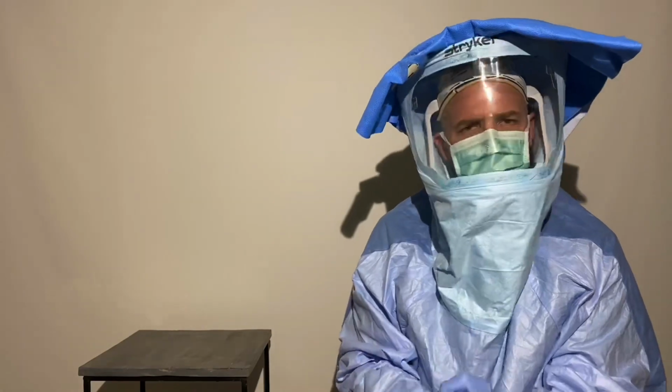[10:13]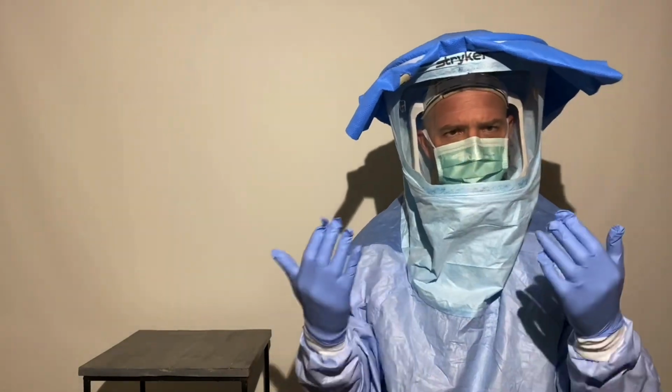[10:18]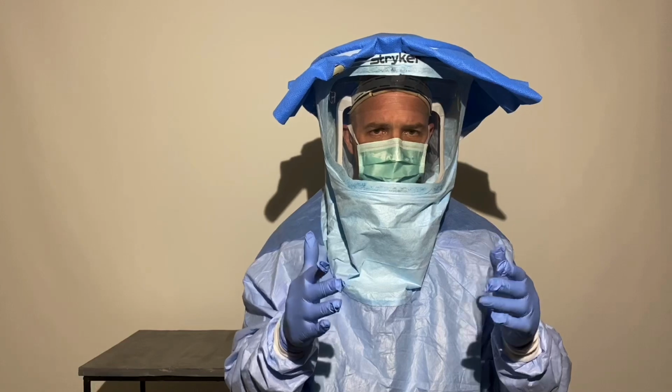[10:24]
Forgive me, they're medium gloves. Show the double glove process where, in our facility, we actually wear a set of sterile gloves over the outside, because they come up further on the sleeves, with regular gloves on the inside. But for appearances, we're just gonna use the double glove here. And so you actually will have the back of it zipped up and you can do whatever you need to.
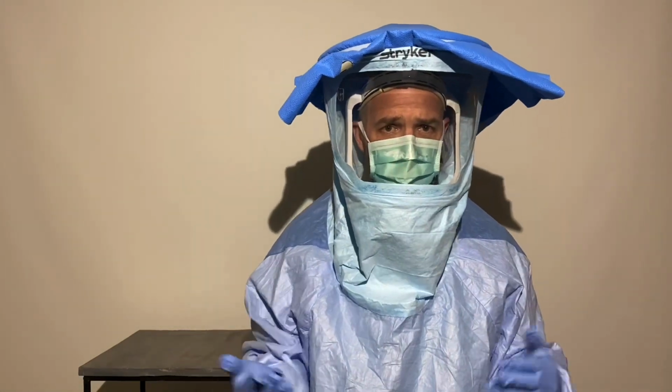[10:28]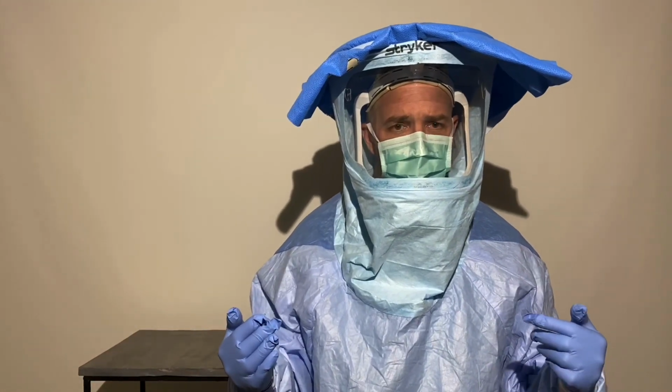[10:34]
The batteries last for a long period of time. If you needed to have your battery changed out, it'd be very easy for someone to unzip the back of your gown outside of a coronavirus area and be able to just slip in a new battery and start your fan back up again. But right now, I've got very good airflow, I'm very comfortable, and I'm done taking care of my coronavirus patient.
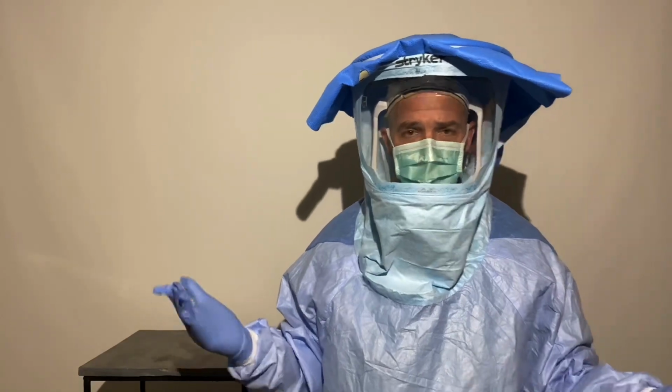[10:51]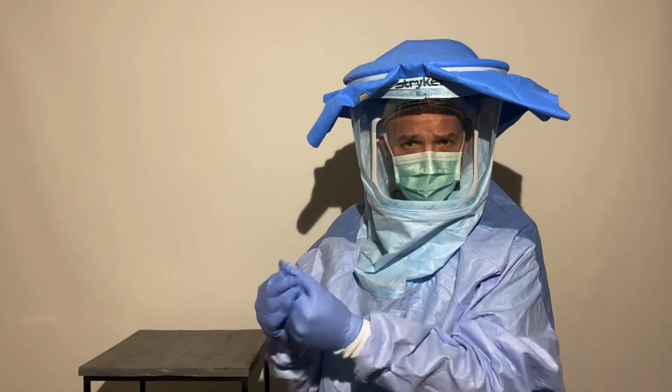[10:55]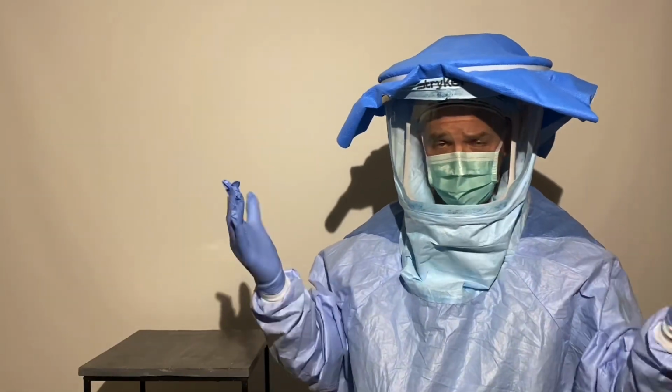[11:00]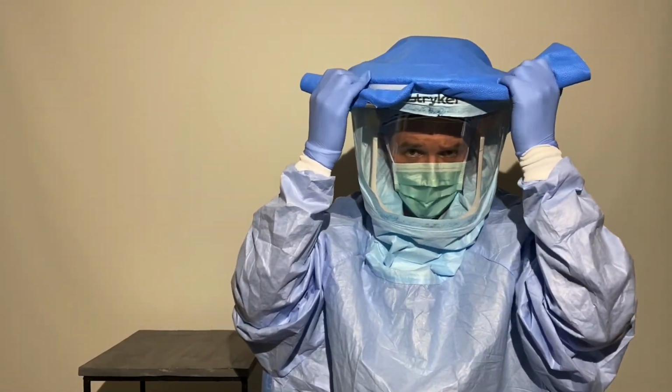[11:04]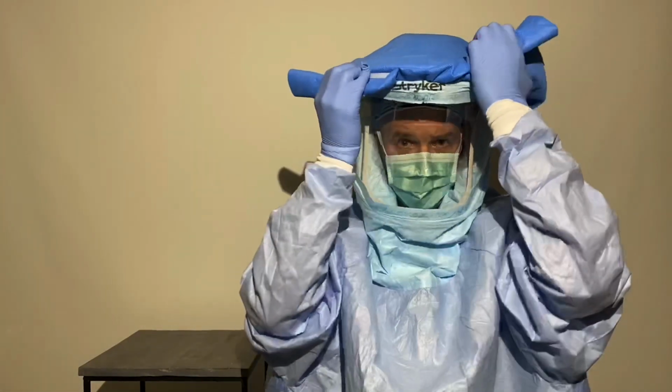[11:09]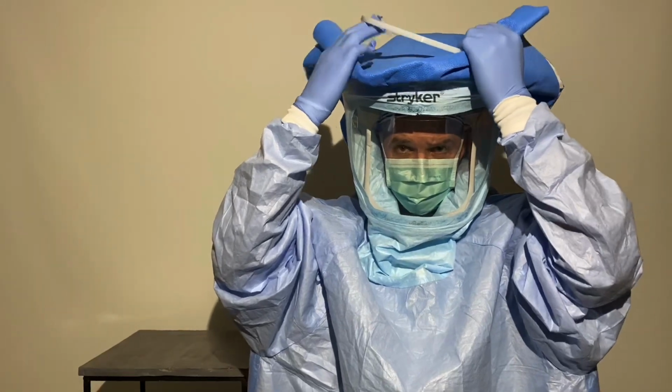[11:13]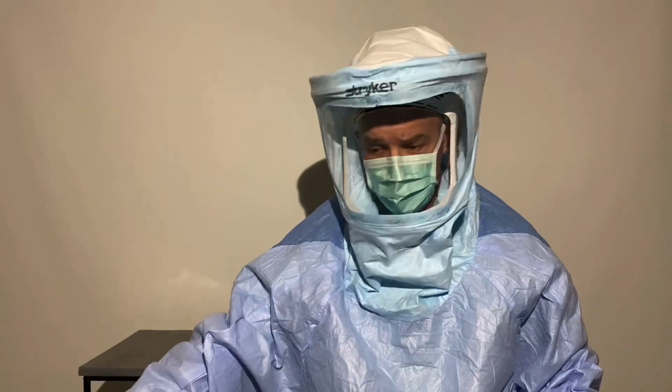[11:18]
And so when I come back out again and I'm ready to be done, I think the best doffing procedure would be to clean your hands like you normally would clean your hands, right? So that you've now scrubbed your outside gloves. The easiest way to take this off by yourself is just to grab a hold of the wings here and put your fingers up against the ring and just roll them up towards the top. So that way it just pops off. And now you have this portion that's popped off your outside. You can take this and throw it into the red garbage bags like you normally would, right?
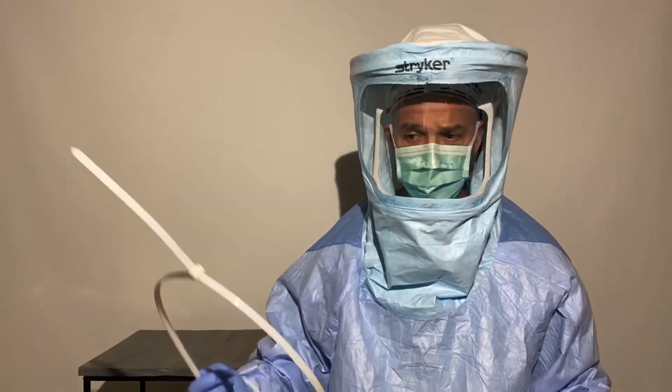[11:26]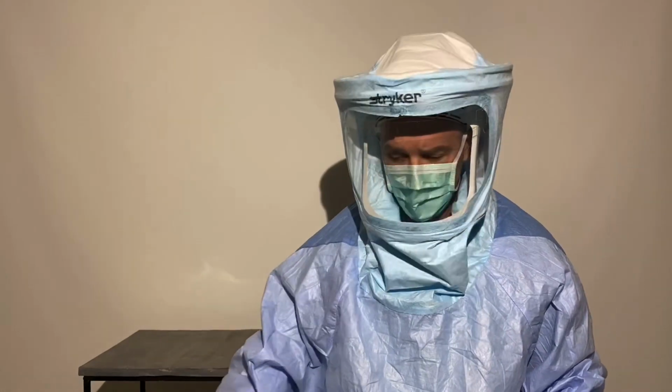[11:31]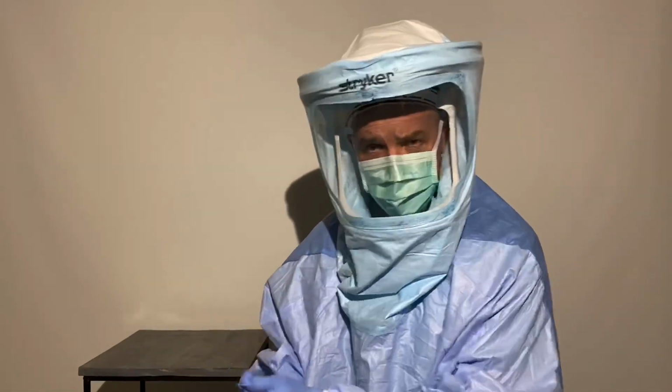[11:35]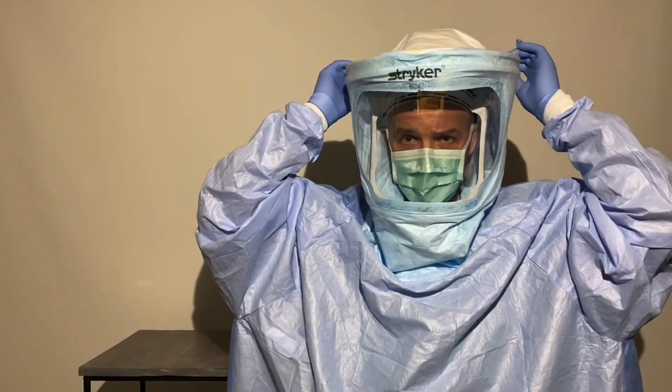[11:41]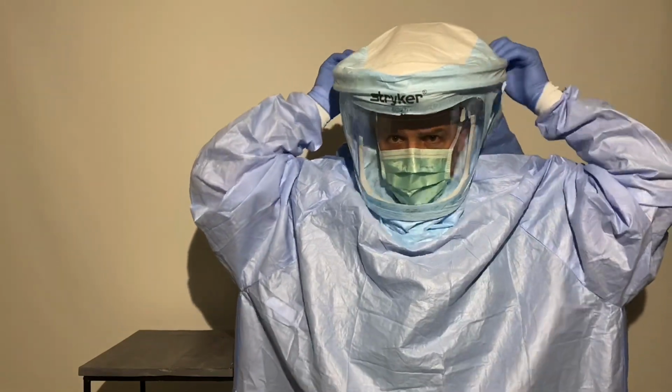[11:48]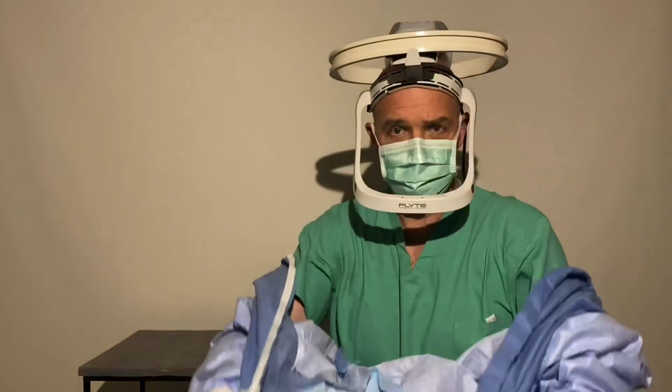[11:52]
And so now that's done and off and in the red garbage bag. You can save the zip ties if you wanted to. You could take those and bleach them or wipe them down, however you needed to. Now you're left with the regular gown. You clean your gloves again, right? You're gonna need some help unzipping the back, but once the back is unzipped, then you can reach up to just the top edges of your gown here and grab a hold of it and work it up and over and peel it down and across the front.
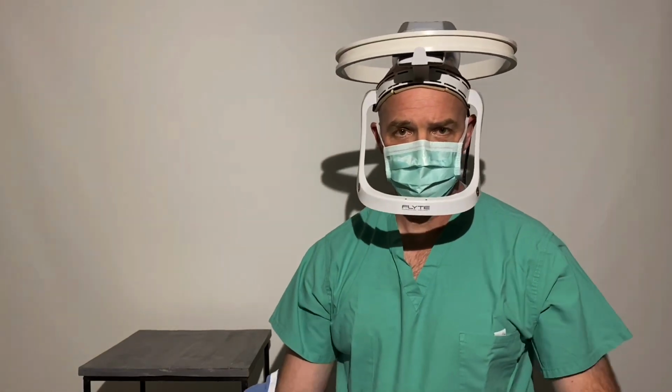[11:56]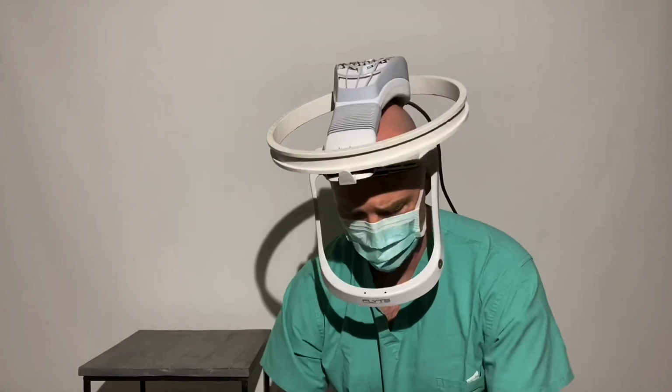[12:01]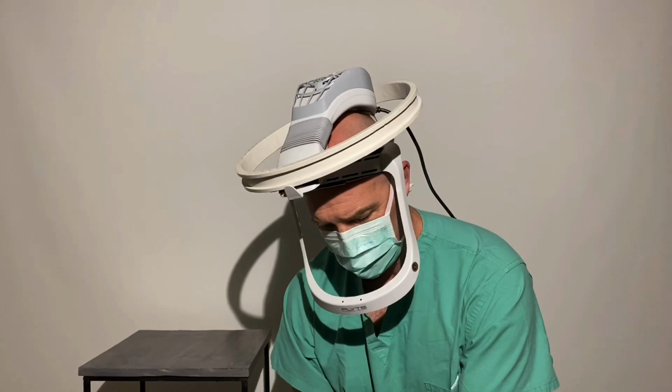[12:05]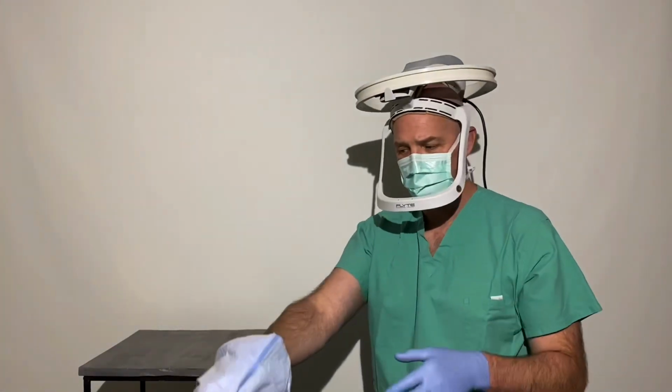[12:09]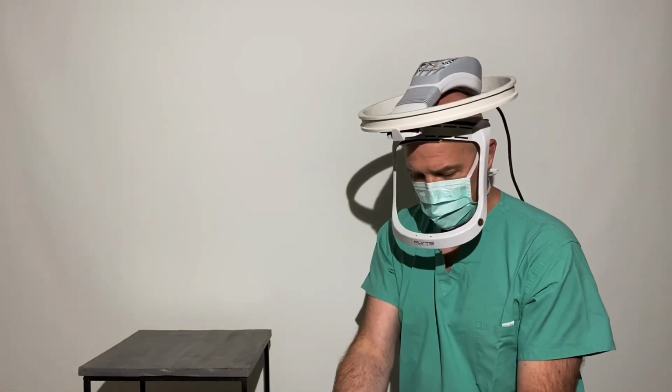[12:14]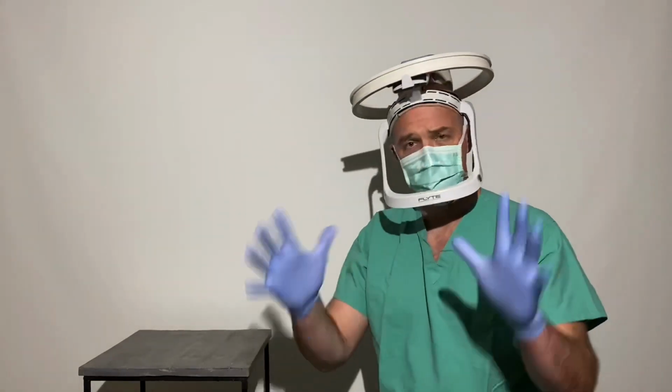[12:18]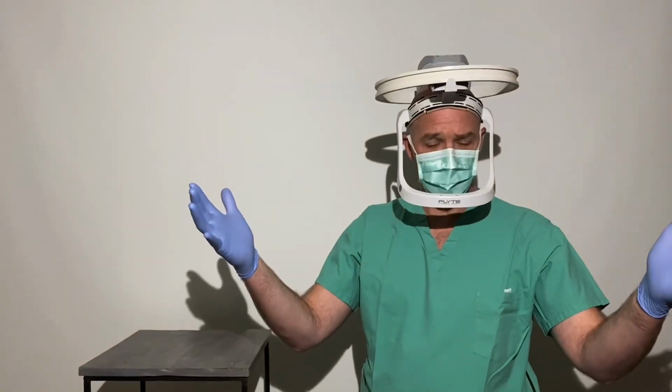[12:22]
And now all you're left with is the helmet on and your face mask. And as you peel the gown down, you can take your outer layer of gloves off inside of your gown as they come off with the rest of your gown, right? And that can go in the red bag. And same thing on this side. This one can come down and you can take your outer glove off with the gown. And now you're left with relatively clean hands here, and you have nothing else on you, and that's all been put into red trash bags to go away.
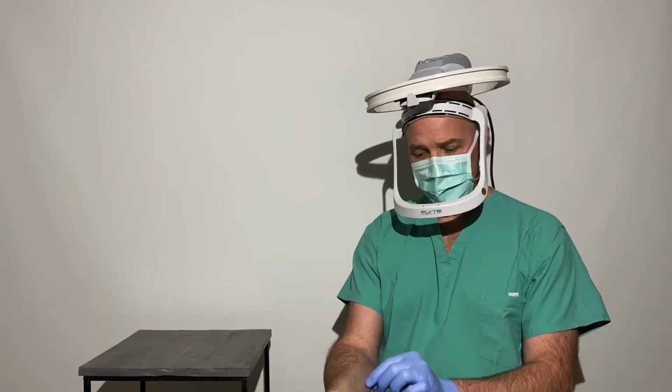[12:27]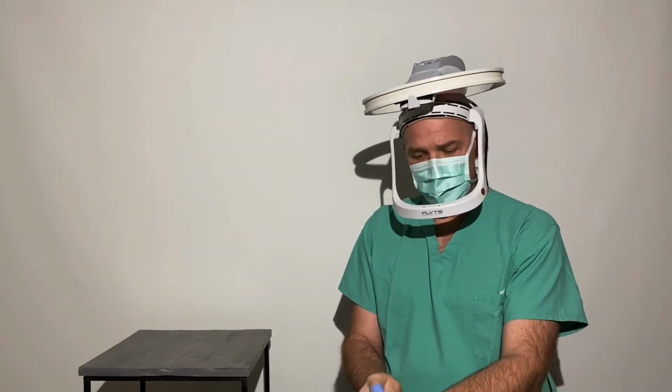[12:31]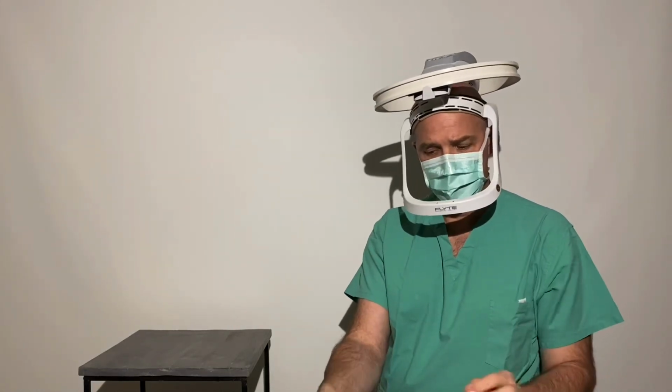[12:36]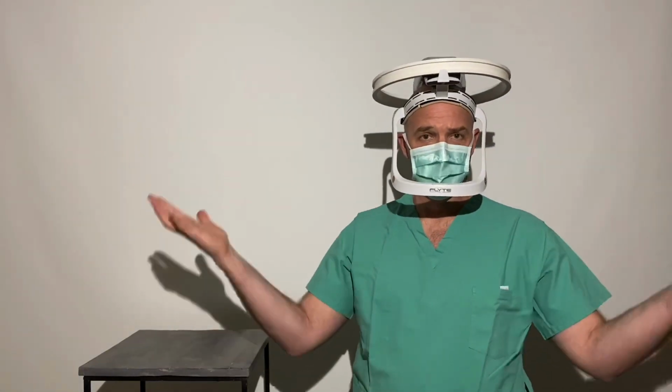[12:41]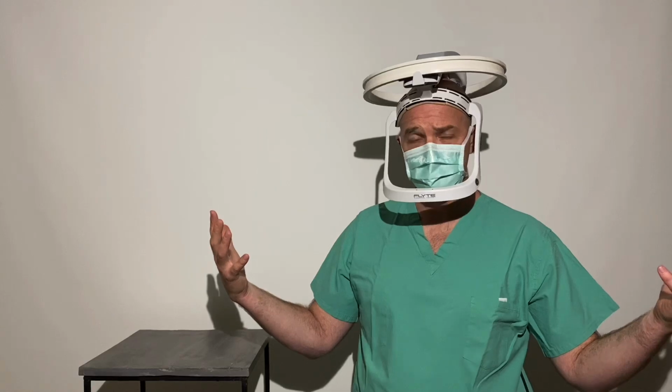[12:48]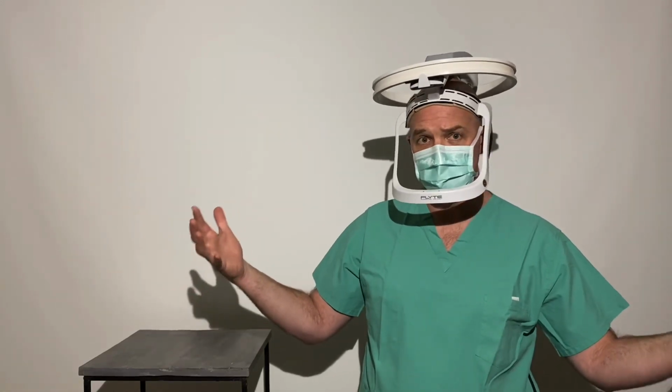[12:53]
And so now you can do the process of taking these gloves off and working them into your other hand and taking those off and putting those into the red bag. And now you can go wash your hands, and the whole time you just have the helmet on your head. And then when you're all said and done, you can take the helmet off. But it has been completely protected the entire time, so that the other PAPRs that you wear on the outside have to go back and be cleaned and sterilized and everything. This, for the most part, has not been contaminated because it has been covered the entire time by the PAPR.
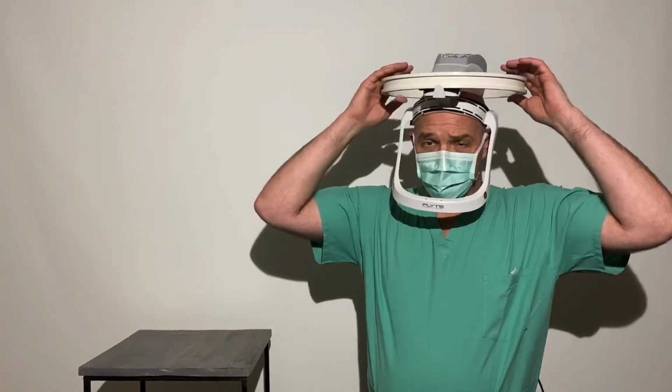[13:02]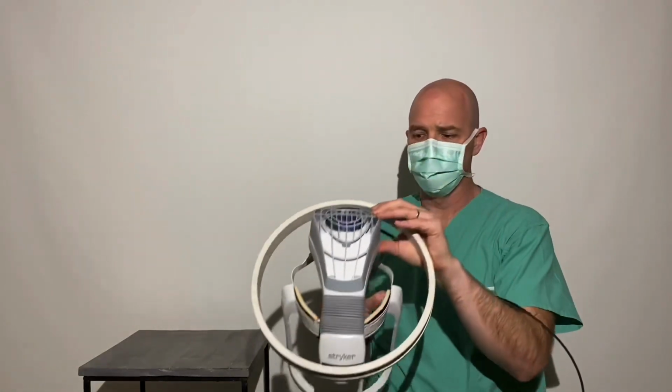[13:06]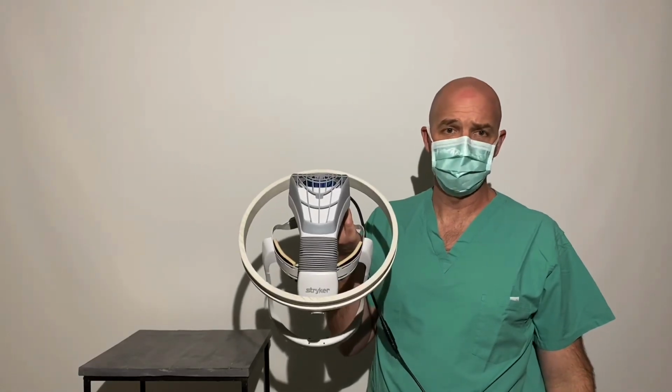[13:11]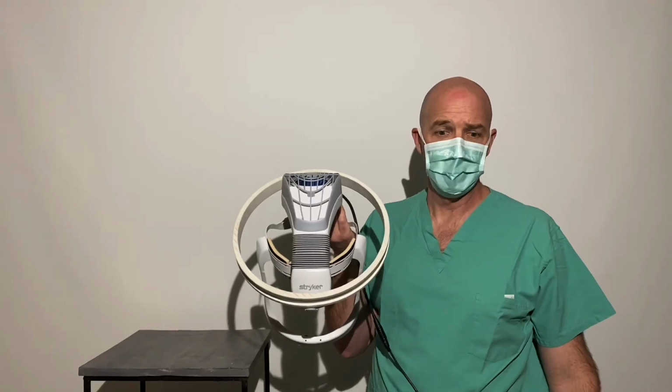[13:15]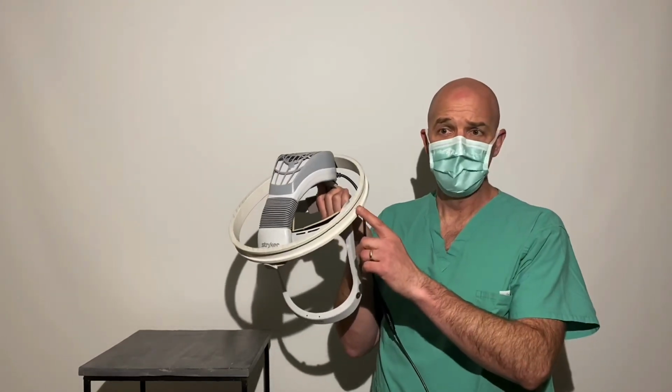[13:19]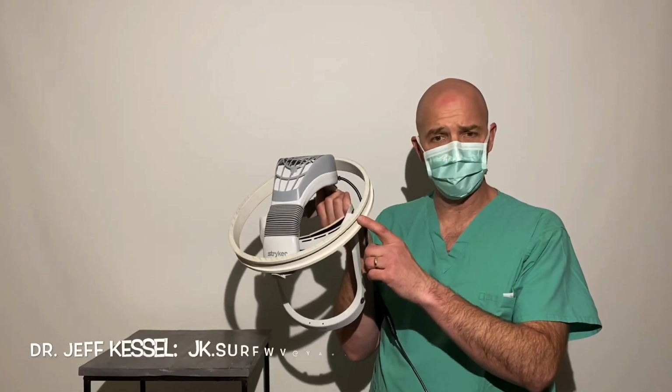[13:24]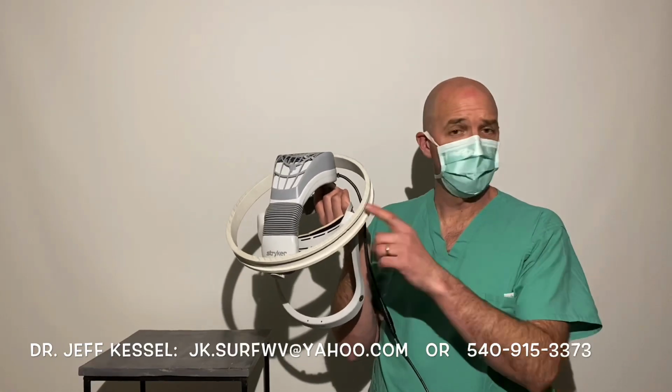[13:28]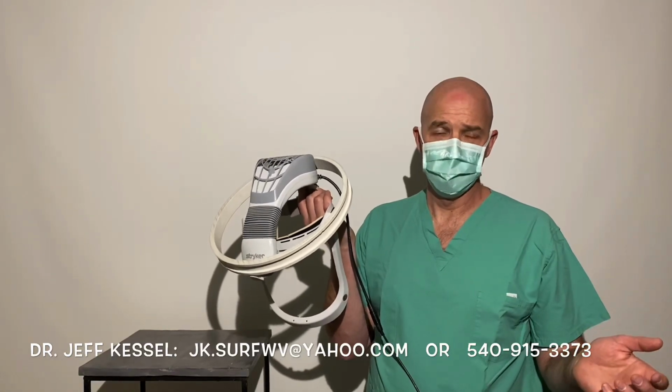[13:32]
So I hope you enjoy the use of your Stryker helmets as a potential PAPR for your hospitals. These are readily available. You can use them now. I've had permission from Stryker to push this out to everybody. And I'm working with a local manufacturer to help make the rings. So if you need them or need help with them, please contact me. I can show you how to make them or source them for you, as well as the zip ties. The rest of the stuff you should have in your hospital.